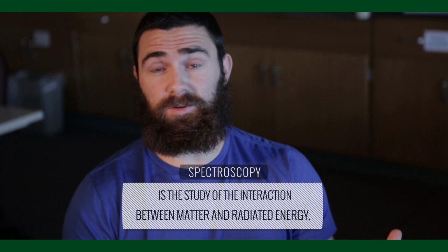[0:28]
The program is designed to take scientific concepts and how teachers can teach those scientific concepts in the classroom. And so one of the concepts that we learned is spectroscopy. What I'm going to do today is show you how to build a spectrometer for less than 10 bucks. And I know some devices on the market cost upwards of $300.
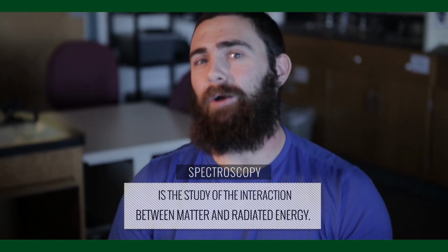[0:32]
The concept of spectroscopy ultimately is how do particles and solutions interact with light. Now, light is a very complicated concept for a lot of teachers and ultimately for students as well. So one great way to illustrate this is actually working with the spectrometer device and seeing what is the resulting light after it passes through a solution.
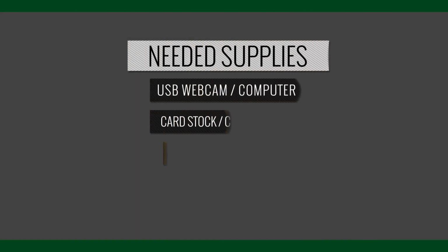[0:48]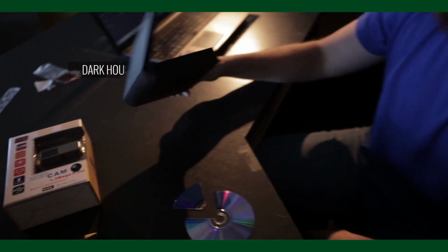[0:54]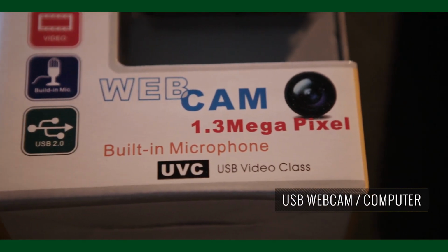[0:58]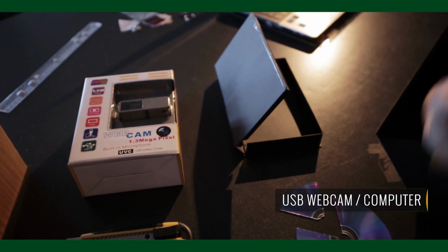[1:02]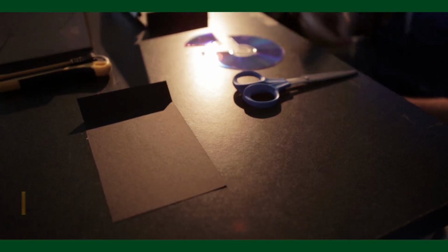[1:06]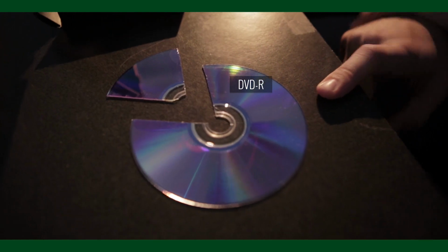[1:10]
So here are all the supplies that we're going to use to build our device. I have a VHS case here, which is essentially going to house the device. A USB webcam, which of course just hooks up to any sort of computer. That's what's going to capture and read our images for us. I have a piece of cardstock here. And then a DVD-R, which is going to do the diffracting of the light for us into the webcam. A couple of cutting supplies is all you need to put this together.
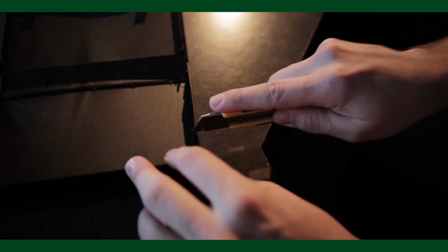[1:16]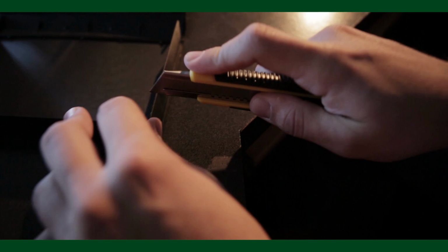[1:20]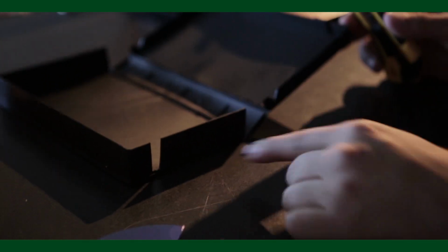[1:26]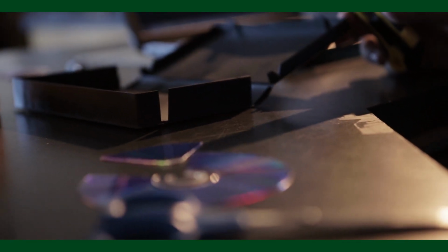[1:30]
So the first part here is we're just going to cut a slit in the side of this VHS case where the light will enter into our system right here. So cut this guy out. Should pop right out. Now this cut doesn't have to be precise, just some sort of opening for the light to come through. I'll show you where the precise cut needs to come into play.
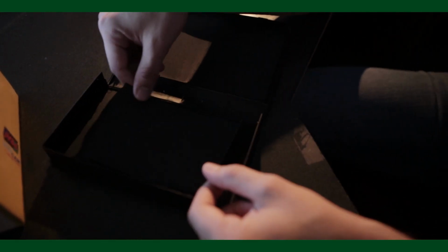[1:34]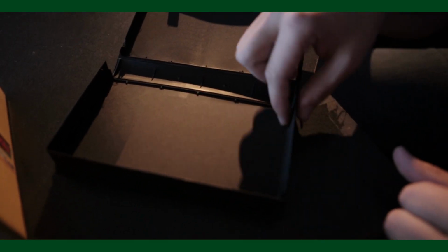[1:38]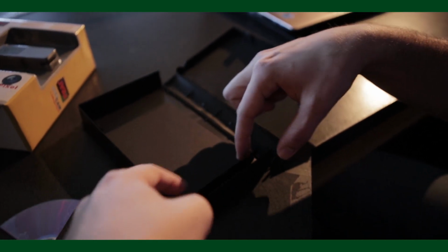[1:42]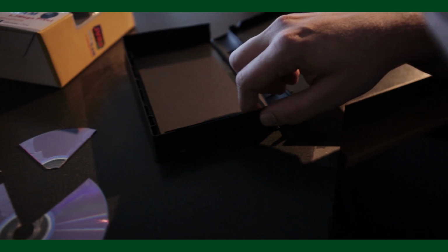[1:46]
The next piece is to take the cardstock. Now you want to make sure your cardstock is cut down so that it fits inside of your VHS box. And then you're going to take the edge of the cardstock and fold it up about an inch. It fits along the side of the VHS box or whatever housing mechanism you are using.
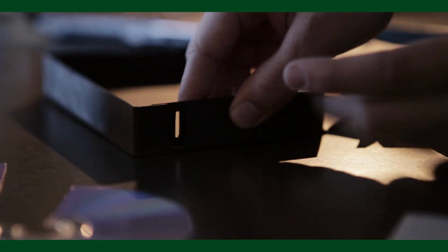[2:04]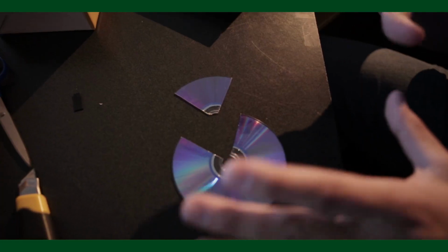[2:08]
This is the only cut that needs to be really precise. It's done with an exacto knife just to help with the precision of this. But you want the slit to be about a millimeter in width. It's cut up on this edge that we have folded up already. And as I put this cardstock into our device, we can see here that that slit does in fact match up with the big cut that we made in our VHS container.
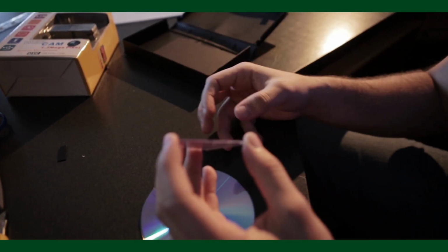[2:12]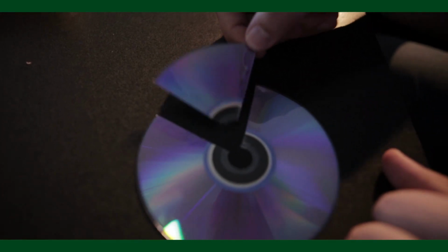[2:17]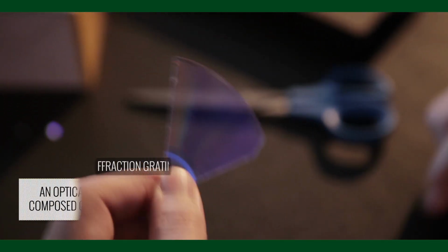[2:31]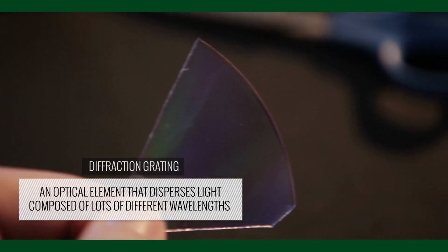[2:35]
We're going to use a DVD-R. And this is ultimately what's going to diffract the light that's going into the webcam. So what I've done is I've just cut a little pie out of the DVD-R here. And what you're going to do is carefully try and split the DVD-R. What we're going to see here is this half with the shiny stuff on, we're no longer going to need this half here. But this part right here has a purple-y tint to it. This is the diffraction grating. And this is what we're going to use to actually separate the light as it enters our webcam.
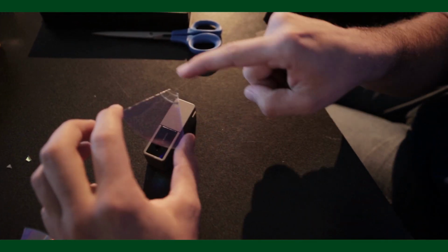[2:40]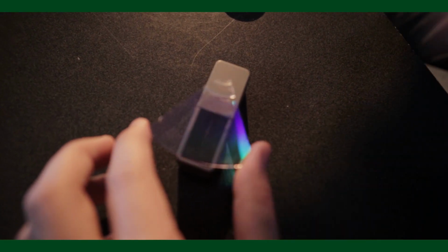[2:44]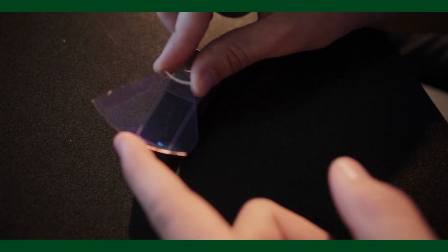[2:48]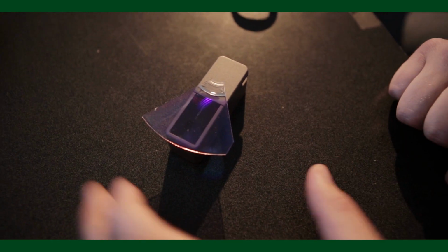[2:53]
Now what I'm going to do is take my webcam here. And we're going to cut down this DVD-R piece so that it fits right over the lens of the webcam. The only thing that you want to keep track of is where the rounded edge of your DVD-R is. We want to make sure that that runs essentially perpendicular up and down with our webcam. So I'm just going to cut a little square out of this so it fits right over the webcam.
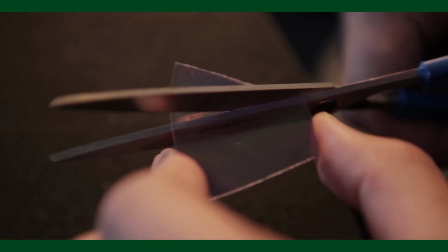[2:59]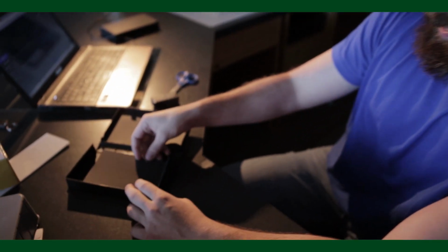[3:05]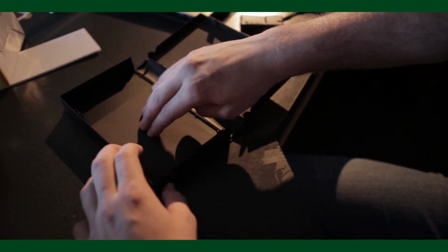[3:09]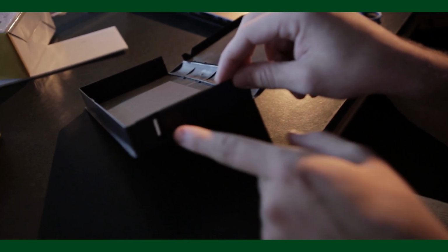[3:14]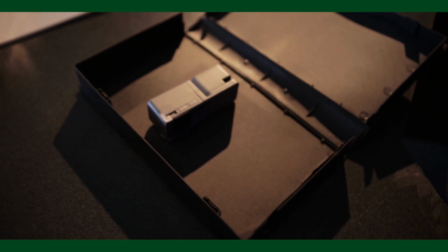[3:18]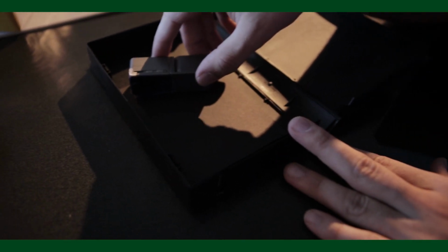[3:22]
So all that's left now is to essentially just tape everything into our device. So I'm going to take the cardstock that we cut out, making sure my slit lines up with my opening. I have a couple pieces of tape on there and I'm just going to tape it in. Now we can see that this is the slit where the light is going to enter. So we want to position our webcam so that it will capture the light at a 45 degree angle. It doesn't have to be precise, but just make sure it's in the ballpark. And then we're going to tape our webcam down.
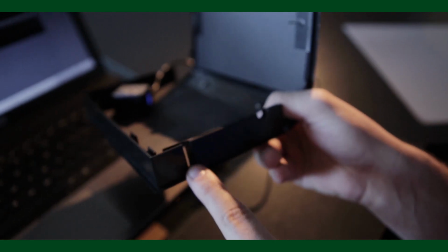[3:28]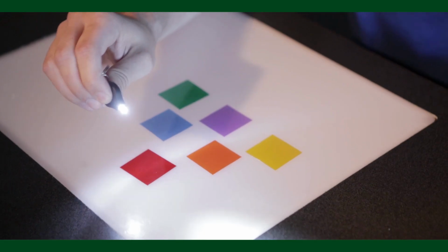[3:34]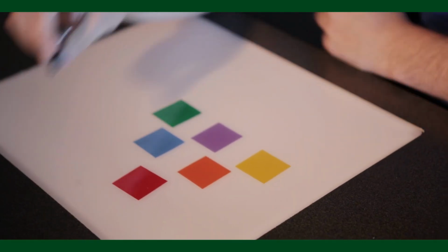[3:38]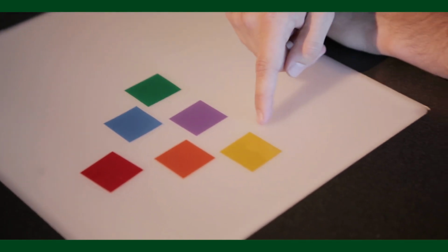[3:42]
Here's my device that I've created in the past. So this is ultimately what the end product looks like. We have our slit cut through and then you can see that it's at a 45 degree angle into my webcam. So for the experiment portion of the lab, all I have here is a white LED and then I took binder dividers and cut them up into one inch squares to represent various transparent colors.
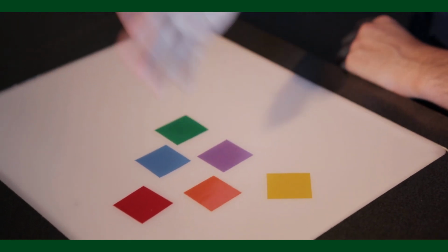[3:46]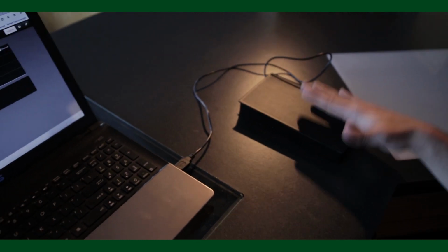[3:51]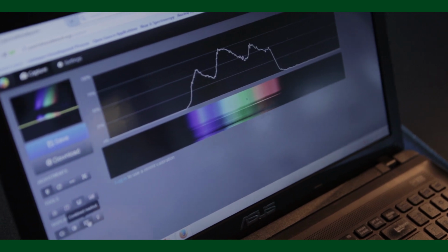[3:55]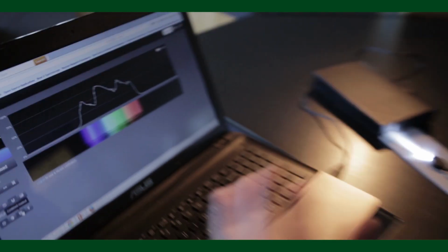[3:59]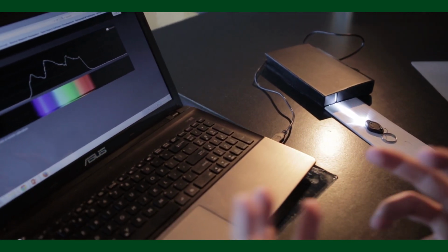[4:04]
So I have here yellow, purples, orange and red, blue and green. So we have our completed device. Really that's all that's left is to plug it in and do some experiments. So what I'm doing here is I've just had my USB device hooked up to some online spectral analysis tool. There are several of them that are available online. What I'm going to do now is show you a demonstration that helps illustrate the concept of color.
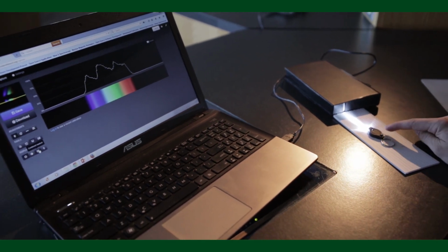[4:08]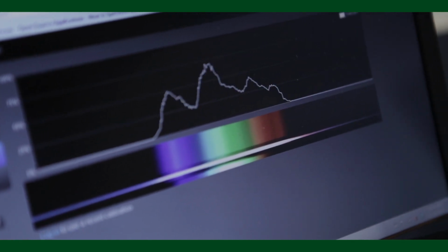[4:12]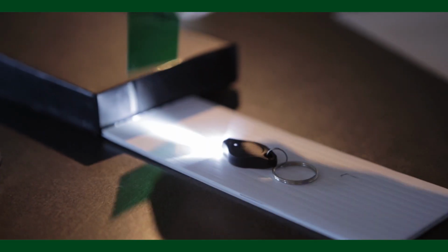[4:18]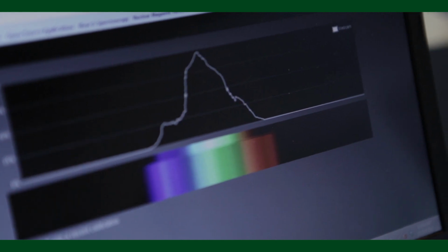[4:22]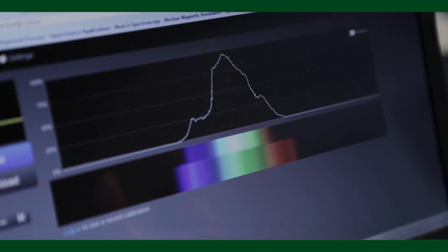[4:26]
The white LED emits a continuous spectrum so we can see that we have a spectrum that's composed of blues and some greens and some reds. And to help illustrate the point of color, I have a green transparent film here. And I'm going to set the green transparent film in between the light and our device. And so what we can see here is that the green film knocks out some of the red colors that are coming through.
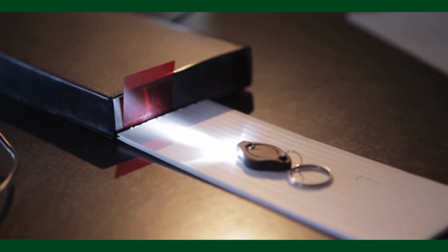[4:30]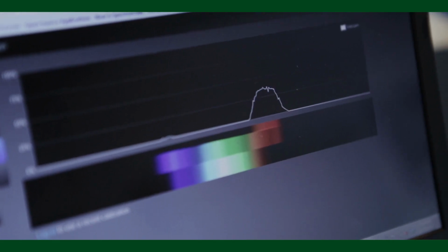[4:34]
We can illustrate this further by taking a red transparent film and blocking the light with that. And now we can see only the red part of the spectrum is coming through whereas before the green and the blue were coming through as well. So this is a great way to illustrate the concept of light and how it relates to various wavelengths. A simple device like this can take an abstract concept like color that's often difficult for students to understand, and make it very visual and concrete for them.
Now this device of course can do a lot more than that. We can look at things like absorbance and transmittance of various solutions and chemicals. We can take a look at Beer's Law and how transmittance and intensity relates to concentration. There are tons of things that you can do with this very simple $10 device.